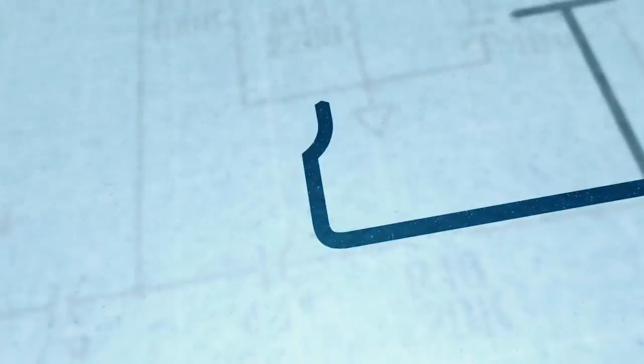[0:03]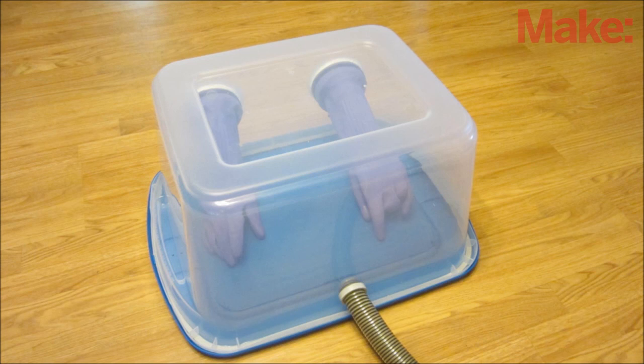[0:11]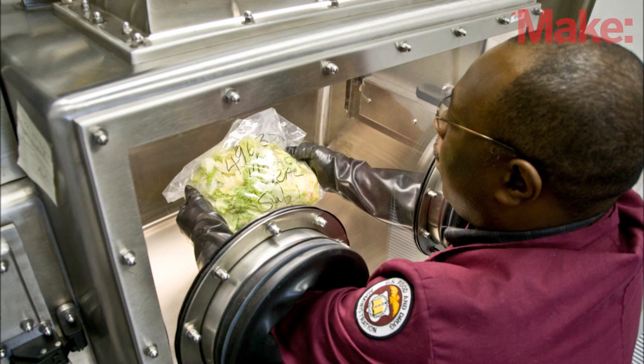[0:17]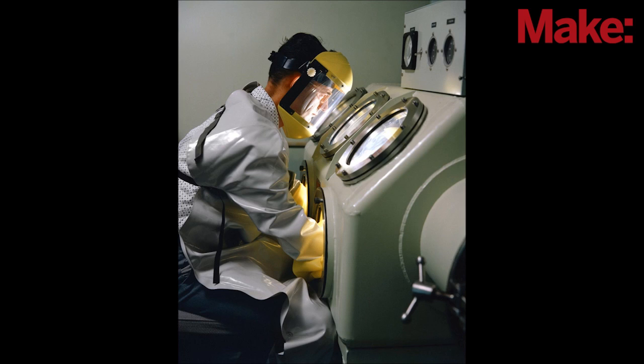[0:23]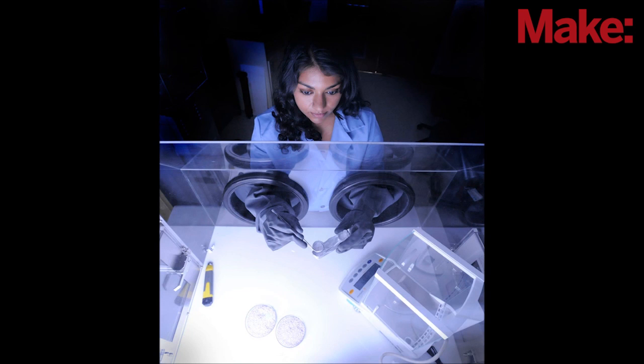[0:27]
Today, I'm going to teach you how to make a DIY glove box. So first off, what is a glove box? A glove box is a piece of safety equipment that lets you perform work on an object while keeping it in isolation. It's most commonly used to protect operators working with hazardous materials, but it can also be used to protect sensitive materials from the outside atmosphere.
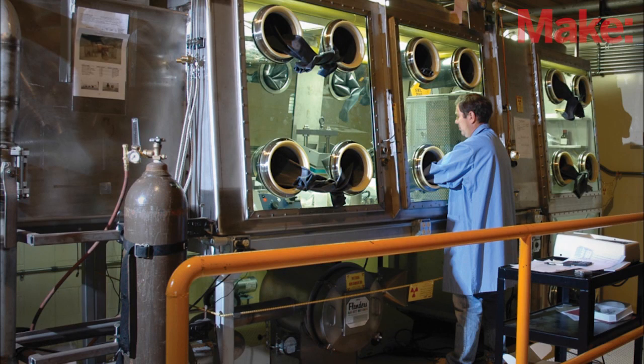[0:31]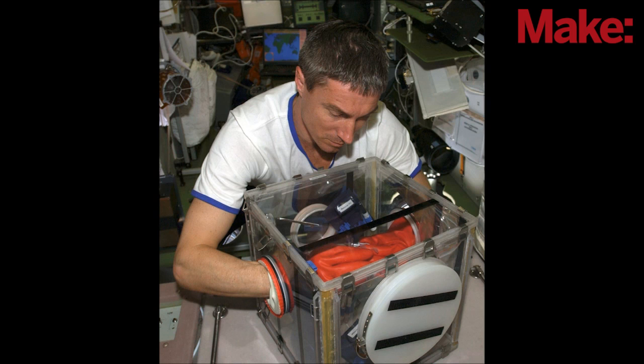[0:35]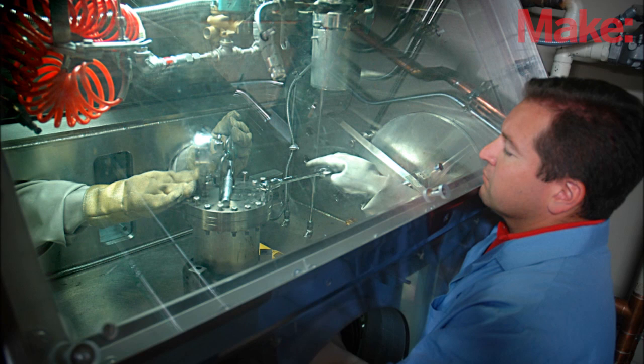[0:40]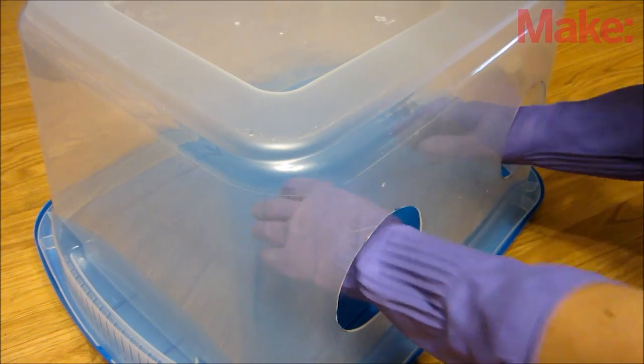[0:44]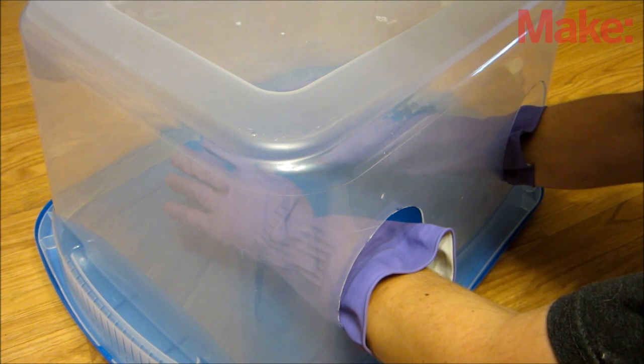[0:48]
There are a lot of potential uses for a glove box, and different applications require different degrees of isolation. So I'm going to demonstrate a variety of features and how to implement them, and you can choose which features you want to use in your glove box. The most basic kind of glove box is just a clear container with holes on the side that you can reach through with gloved hands.
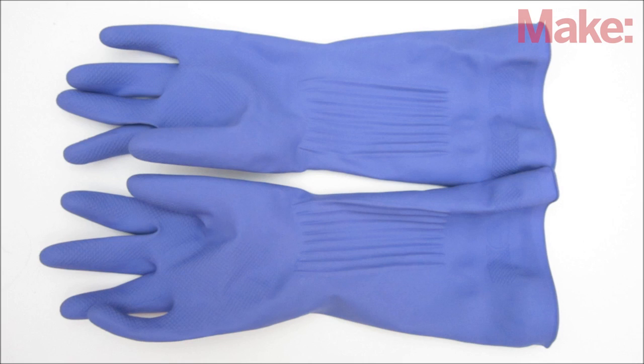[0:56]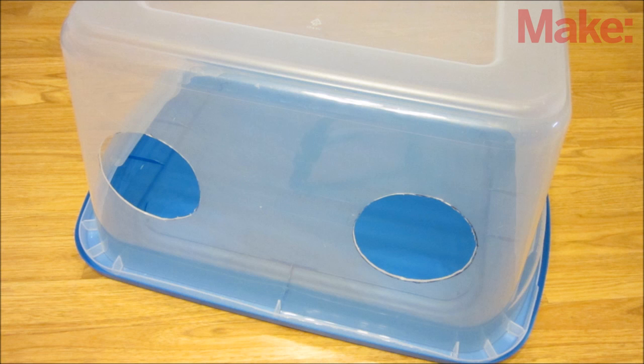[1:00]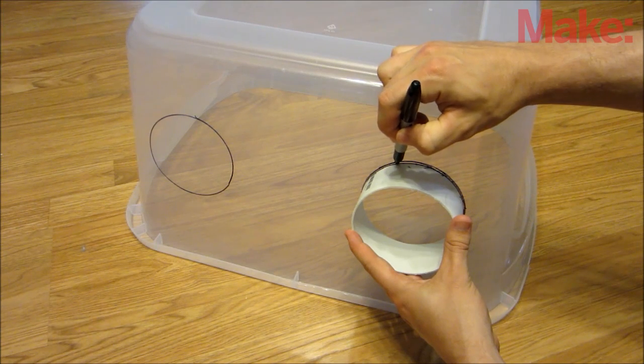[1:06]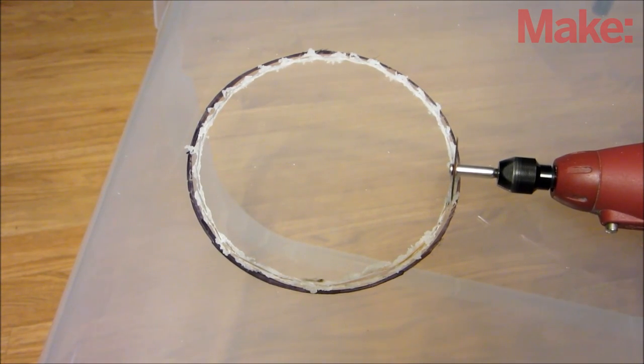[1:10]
This design is suitable for containing large particles that quickly settle to the bottom of the box, such as wood chips or metal shavings. To make this, you just need a pair of gloves and a clear plastic storage bin. Start by deciding where the arm ports will be located. You want them to be in a comfortable working position. Then trace a 4-inch diameter circle for each arm port and cut them out with either a knife or rotary tool.
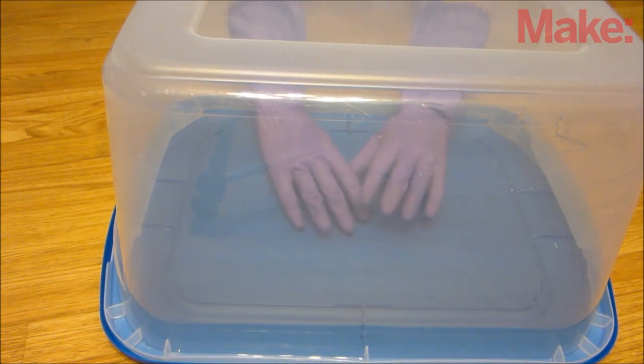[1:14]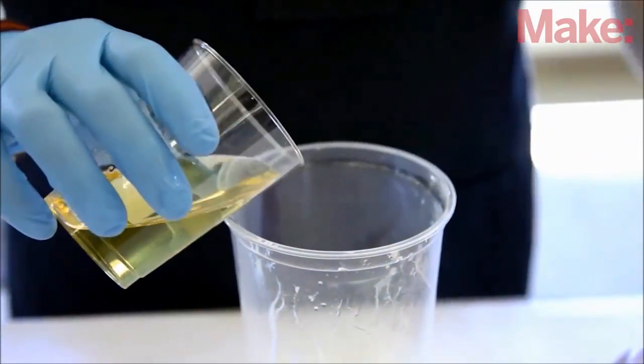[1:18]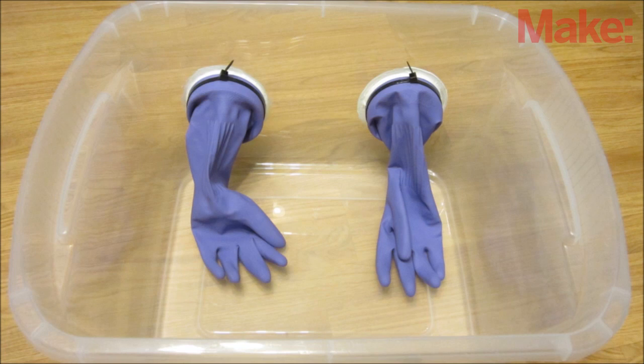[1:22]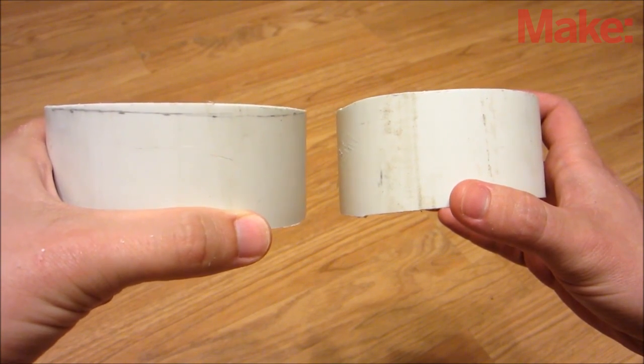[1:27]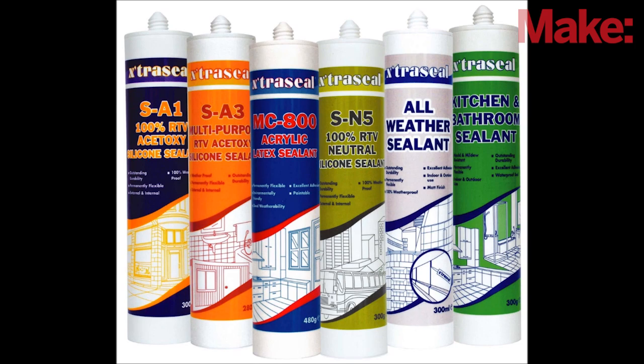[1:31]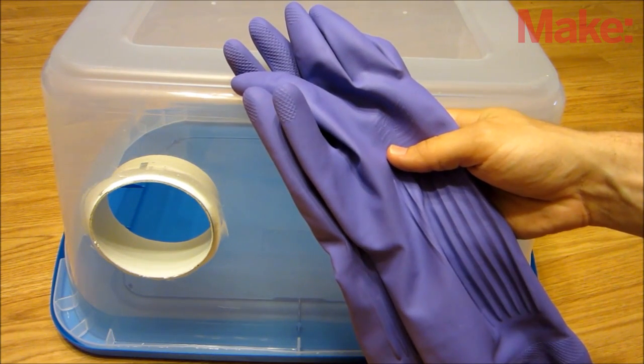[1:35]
If you want to keep fine particles or chemical fumes contained, then you need to seal the openings of the glove box. The first step in doing this is to seal the arm ports. To make the arm ports, you'll need two pieces of 4-inch diameter PVC pipe that are each 2 to 3 inches long. To seal the edges of the pipe, you'll need a tube of sealant. For the gloves, I recommend using elbow-length waterproof gloves.
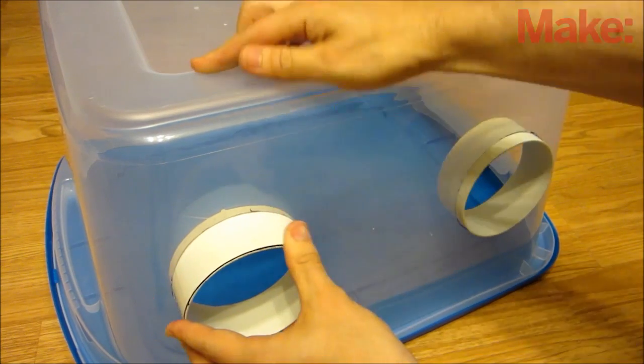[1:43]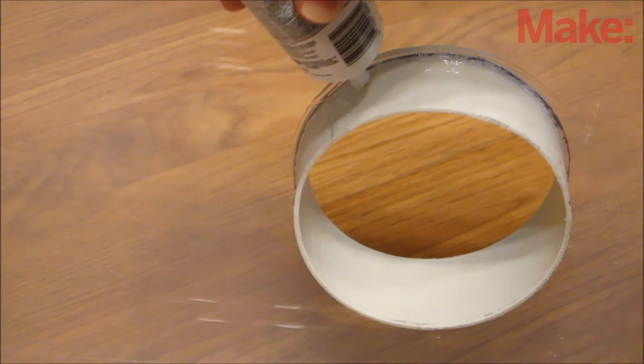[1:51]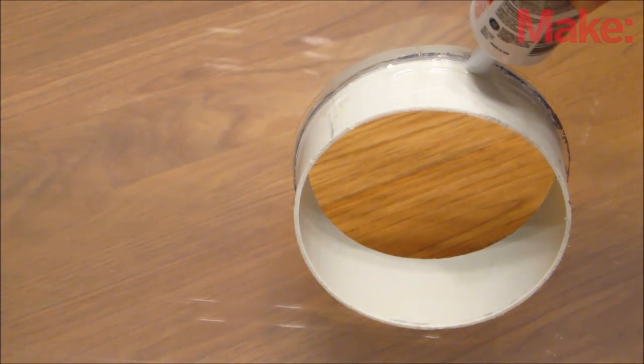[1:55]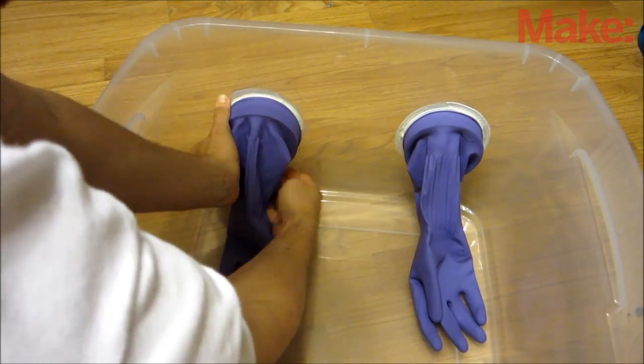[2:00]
And to attach the gloves to the PVC pipe, you can use hose clamps, zip ties, or even strong rubber bands. Begin by inserting the PVC pipe into the cut holes. Position the pipe so that there's about a half inch of pipe sticking out of the side of the box. Apply the sealant around the edges of the pipe on both sides and let them dry overnight. Then fit the gloves over the PVC pipe on the inside of the box. Lastly, secure the gloves to the PVC pipe.
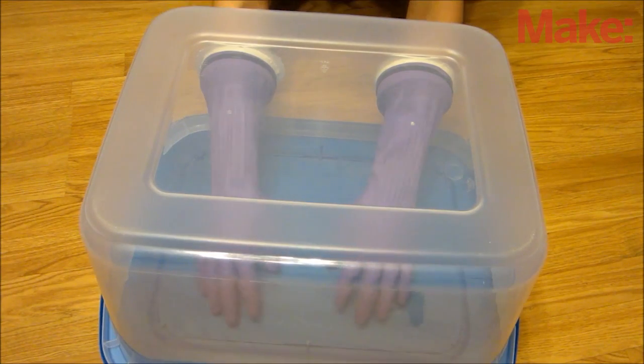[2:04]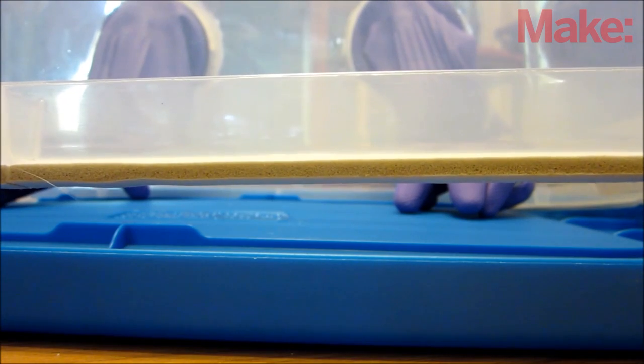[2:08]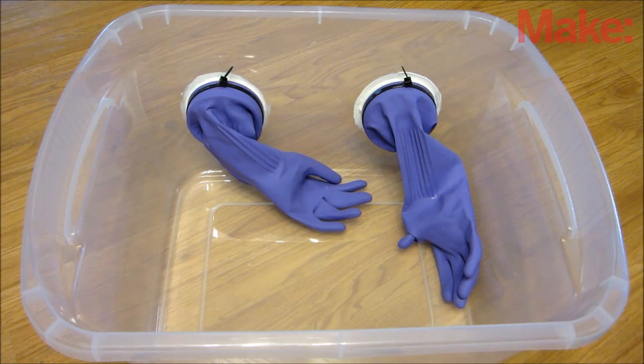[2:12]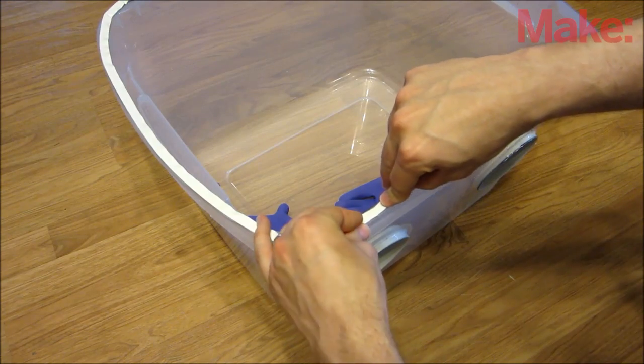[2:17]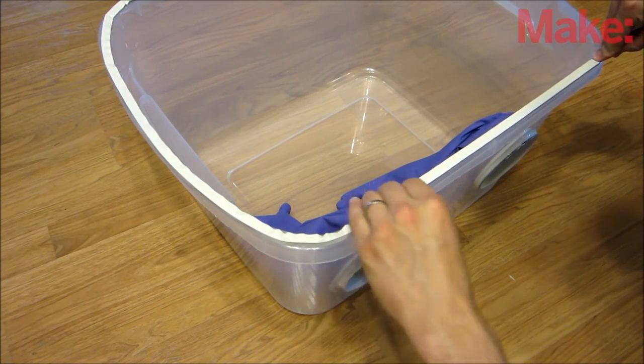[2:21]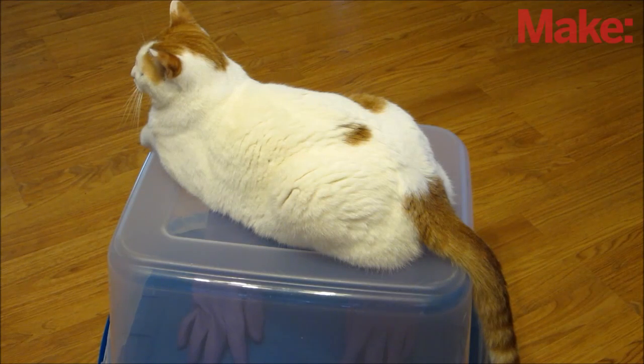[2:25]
To make a better seal at the base of the glove box, you can add foam between the sides of the tub and the lid. The easiest way to do this is to apply weather stripping all along the lip of the tub. It's possible that the foam will be too thick for the lid to snap on. If this is the case, you can get an extra tight seal by either clamping the lid on or by placing a heavy weight on top of the box.
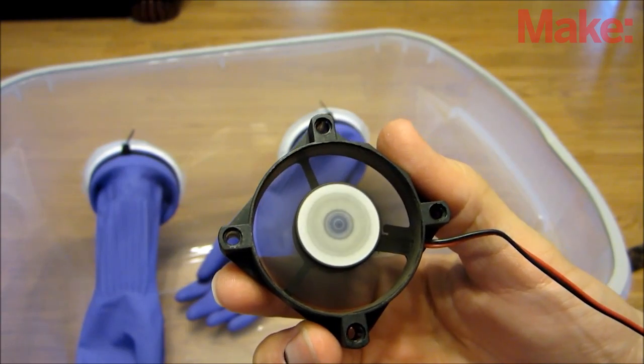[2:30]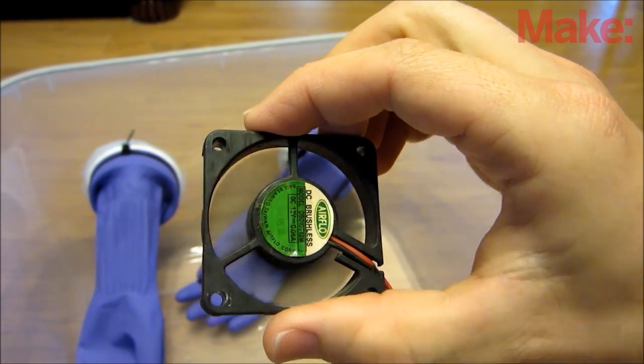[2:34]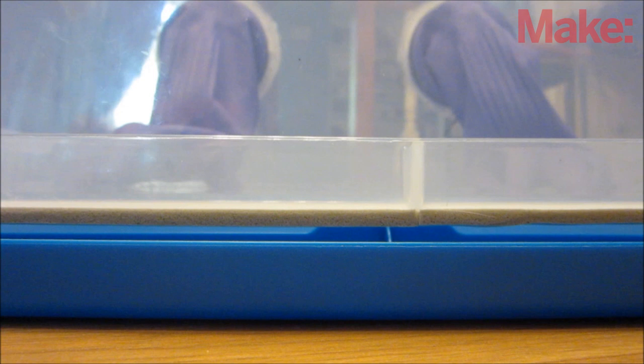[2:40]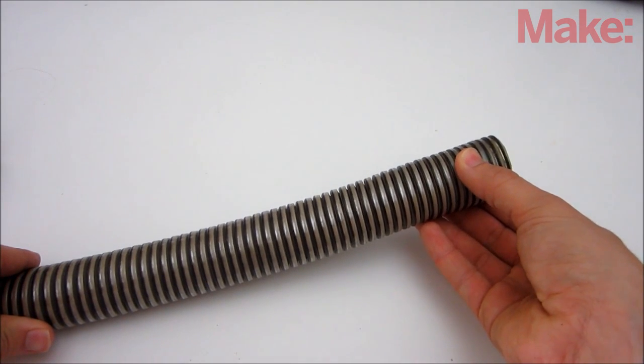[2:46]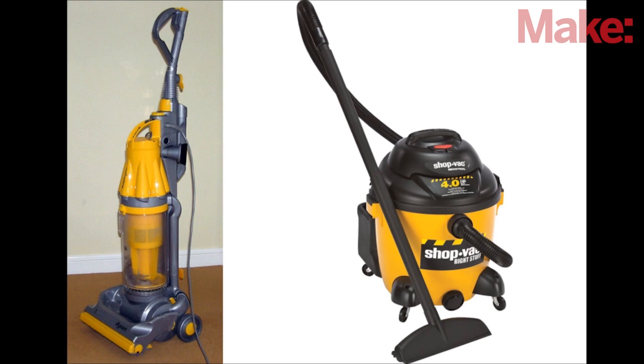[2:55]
Another way to ensure that no gases escape is to add a ventilation fan and air hose to blow the fumes outside. The fan draws air out of the box so that the pressure inside is slightly lower than the pressure outside. This means that if there are any gaps, air flows into the box and not out. To add this feature, you'll need an air hose and some kind of a fan. For a small pressure difference, you can use a small fan such as a computer cooling fan. Or for a greater pressure difference, you could hook up your vacuum or shop vac.
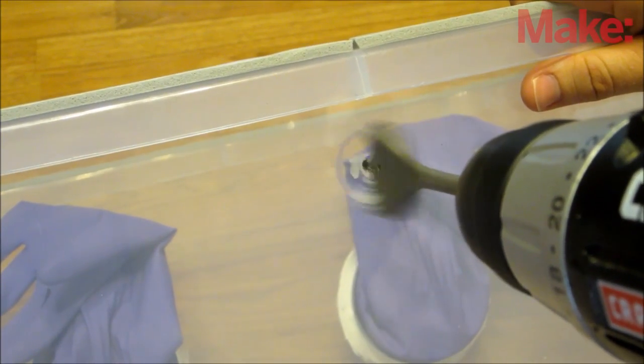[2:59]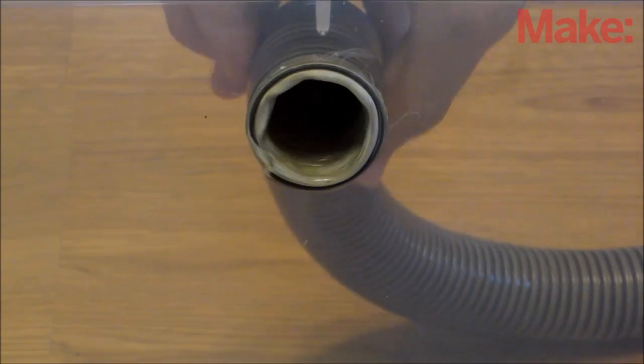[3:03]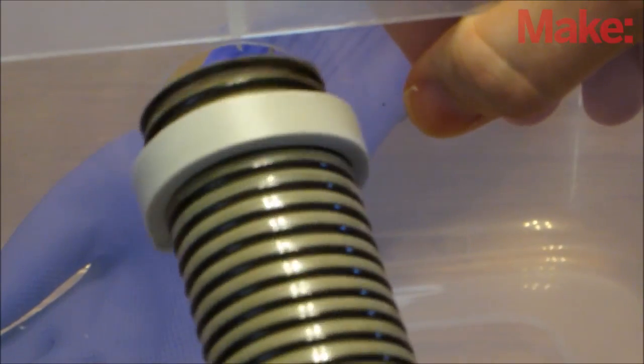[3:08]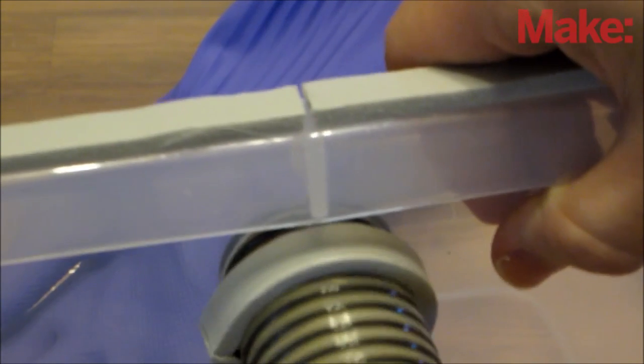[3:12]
Start by cutting a hole in the back side of the glove box that's the same size as the air hose. Then insert the air hose through the hole. If you want the air hose to be removable, you can help seal the edges with weather stripping. Otherwise, just use your tube of sealant.
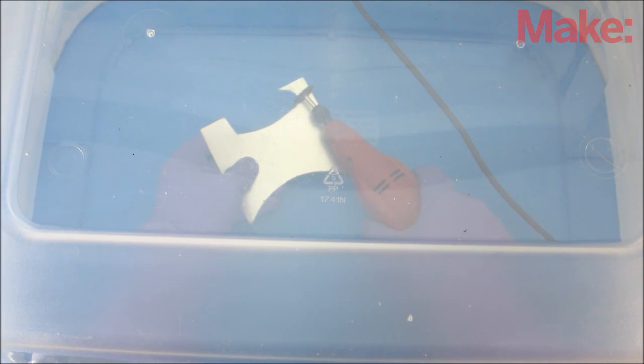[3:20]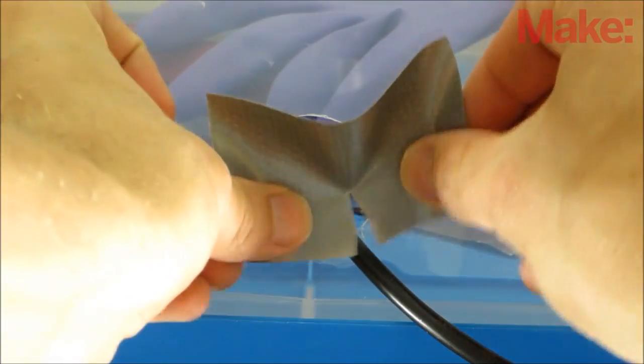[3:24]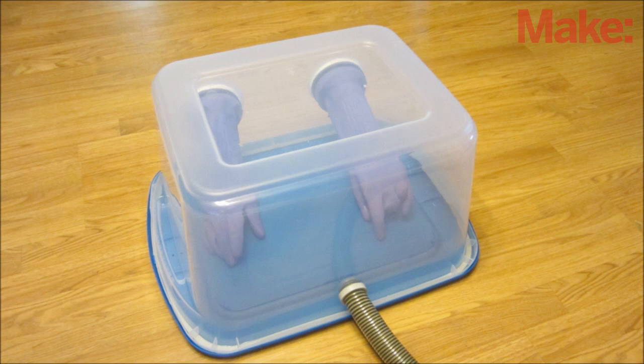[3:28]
If you want to be able to use corded power tools in the glove box, then you'll need a hole for the power cord. You can either use the air hose hole, or you can drill a new one. After feeding the power cord through the hole, you can cover up the opening around the cord with either foam or tape to help maintain the seal. Now you have a simple DIY glove box for your next messy, smelly, or sensitive project.